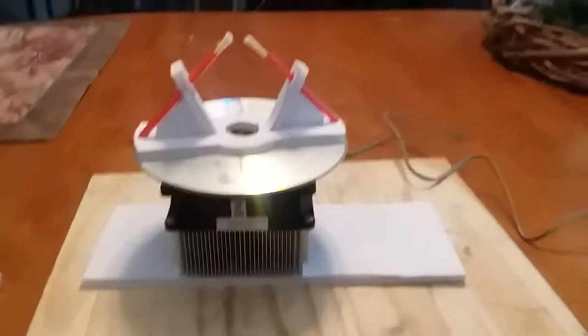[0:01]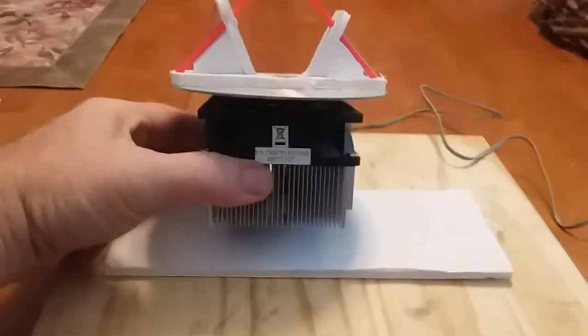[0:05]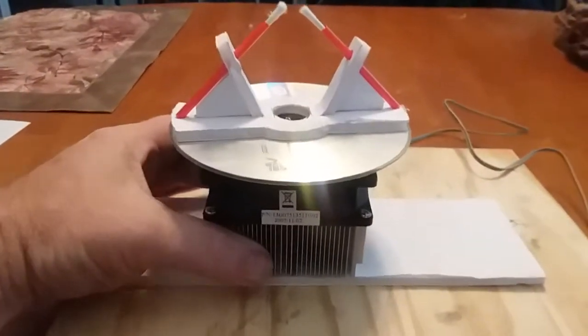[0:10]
Hi, this is Mitch, and I wanted to show you something that I made. I've been working on it the last couple of days, and it's what I call the $7 centrifuge.
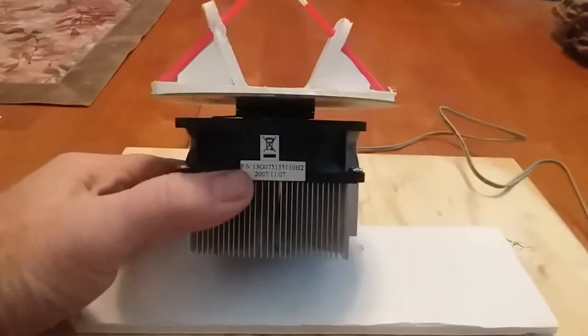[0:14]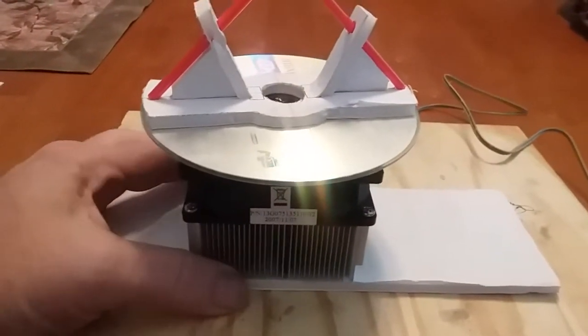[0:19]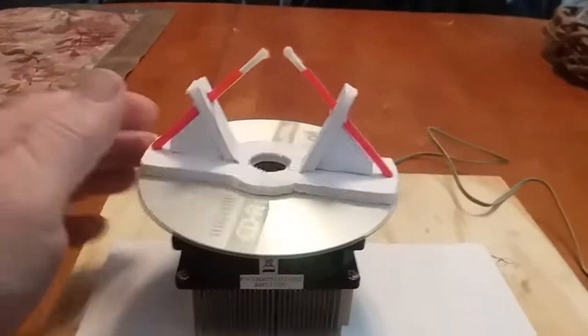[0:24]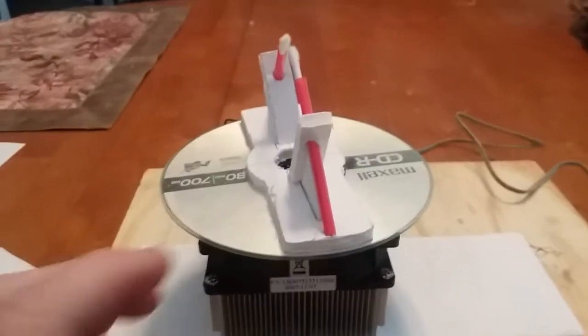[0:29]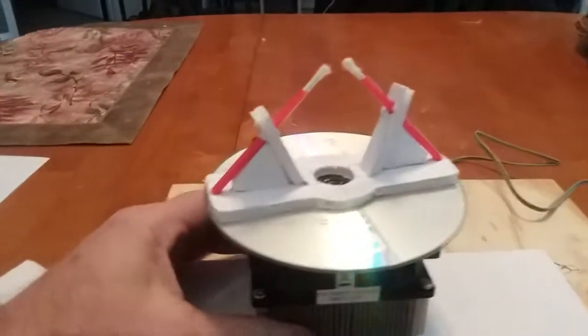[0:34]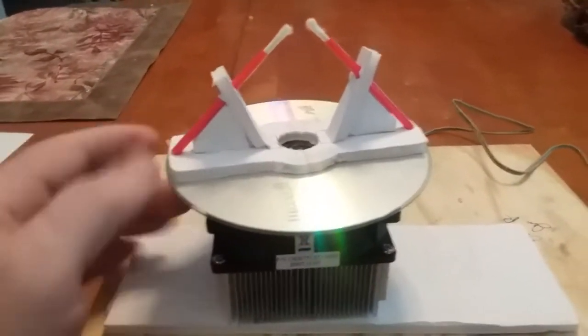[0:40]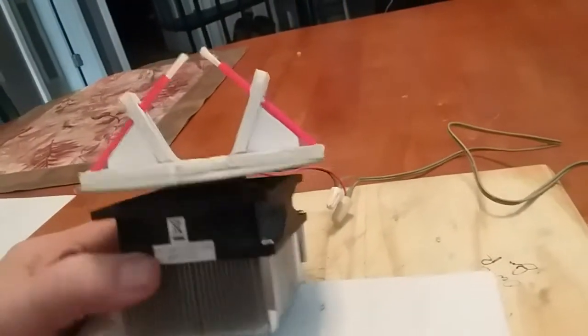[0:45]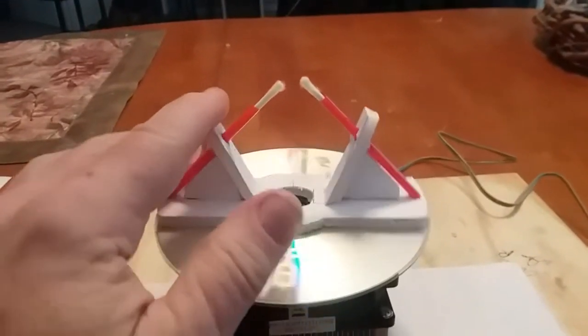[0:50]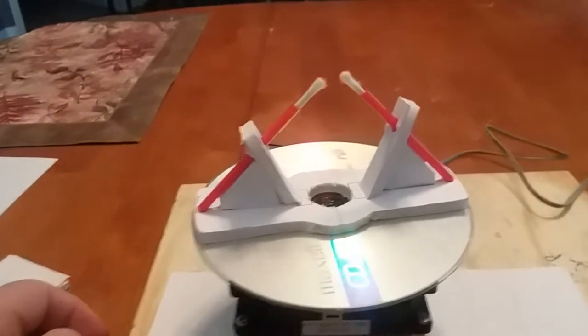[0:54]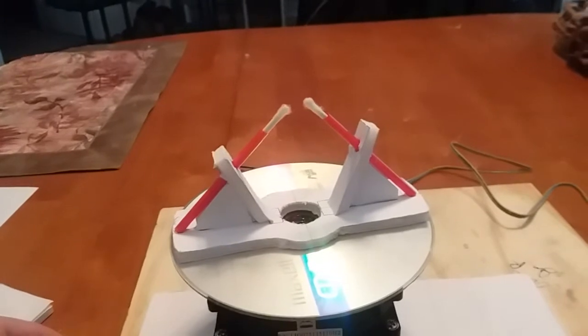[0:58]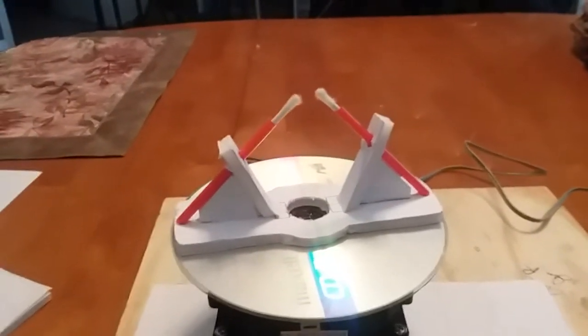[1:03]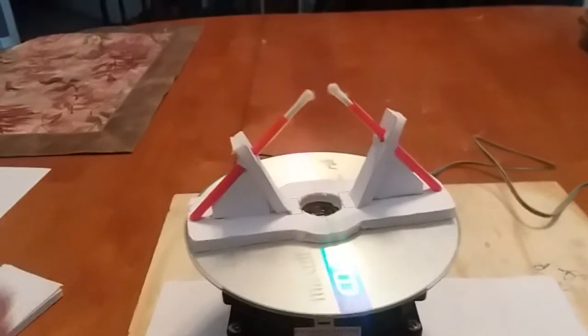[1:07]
And a microhematocrit tube is like a 1.5 millimeter diameter glass tube that you put blood into, and it uses capillary action. So after you prick your finger, you put this glass tube up to the blood droplet, and it just sucks it up into the tube.
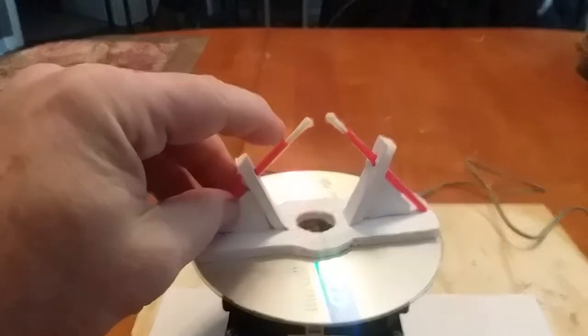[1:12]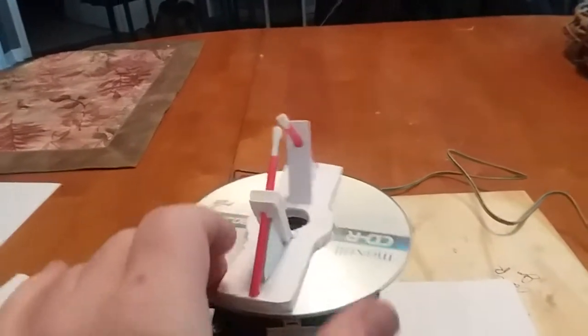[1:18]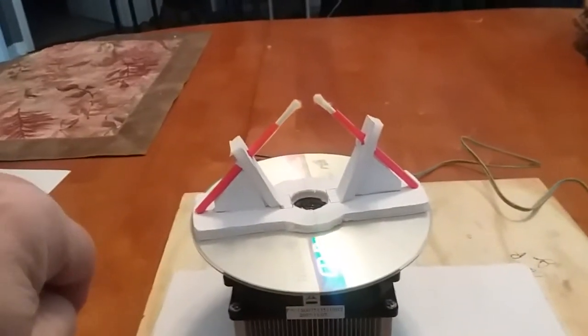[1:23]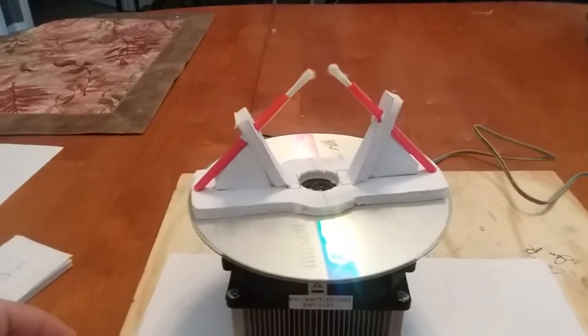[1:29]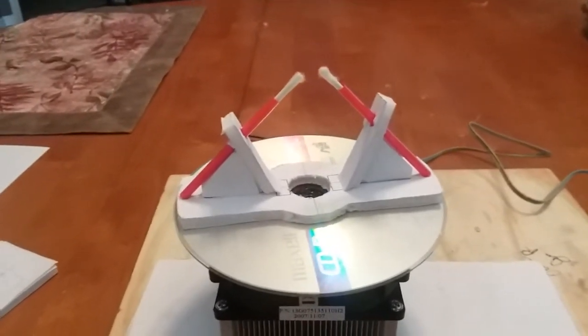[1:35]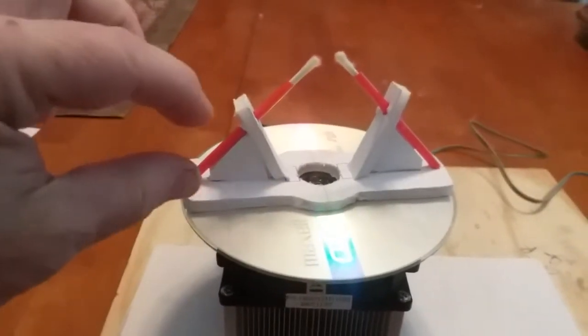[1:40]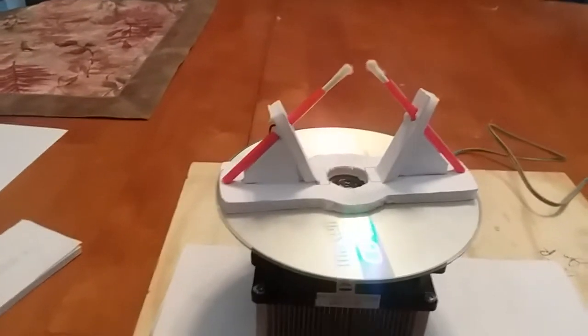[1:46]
And after you get the tube 75% full, you can put it in a centrifuge and you spin it, and then the centrifugal force will cause the red blood cells to move to the bottom of the tube, leaving the plasma portion at the top. And then after it's separated, you can measure the entire length of the fluid in the tube, and then divide that into the length of the column of red blood cells, and then you get your percentage of red blood cells, and that's your hematocrit number.
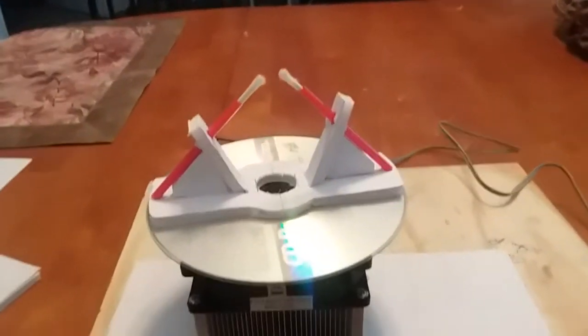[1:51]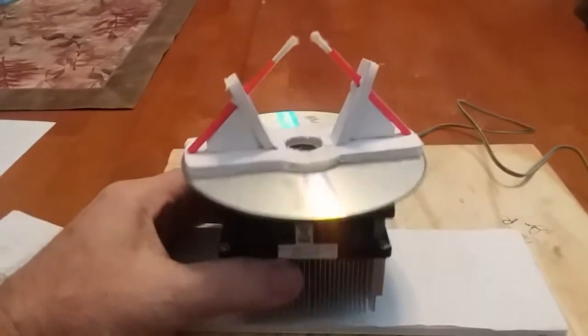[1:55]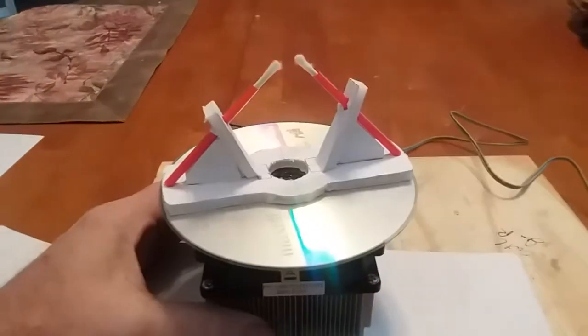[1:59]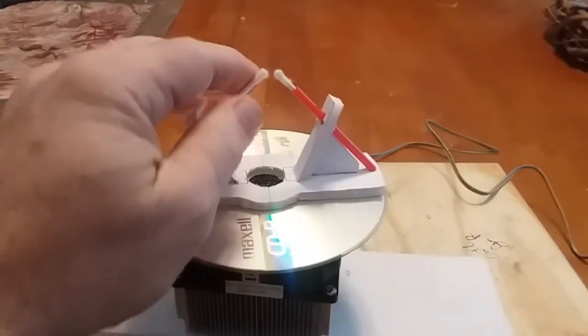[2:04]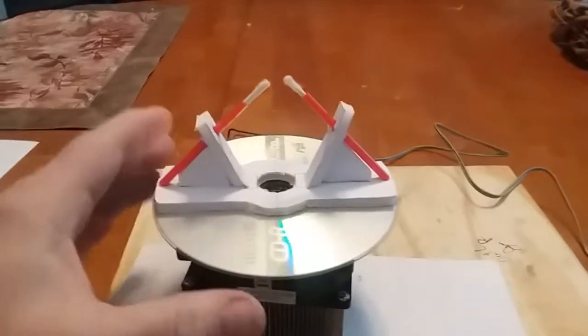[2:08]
So I think I can do this at home, and I wanted to try, so I made a $7 centrifuge. I don't have my hematocrit tubes in yet. They should be in any day. So I use Q-tips to kind of simulate having some kind of mass in there.
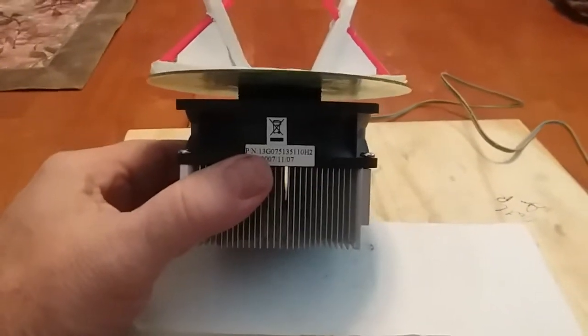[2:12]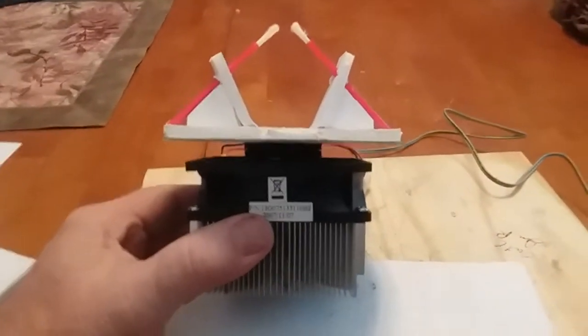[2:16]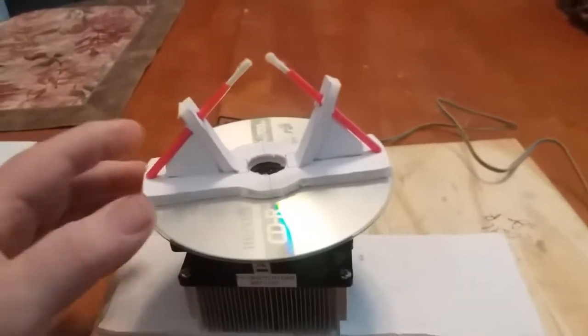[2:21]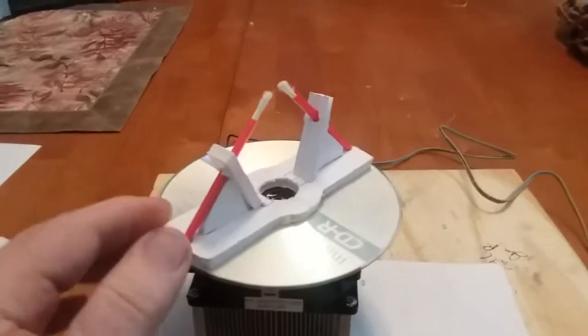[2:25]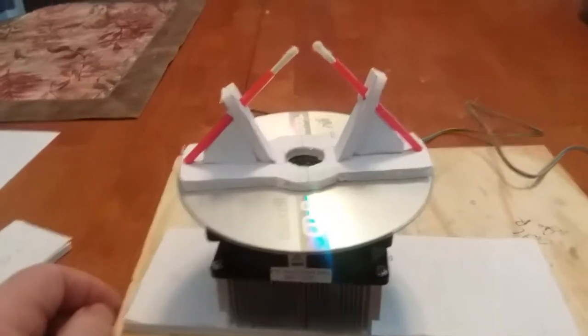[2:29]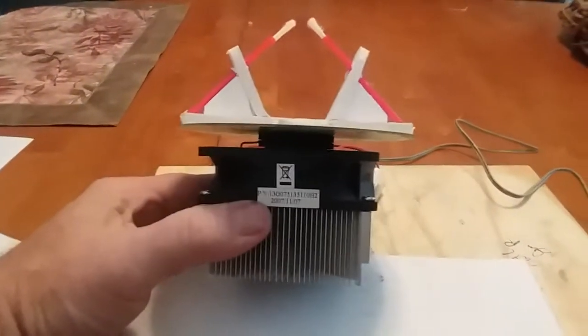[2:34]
And I wanted to tell you about how I came about making this. It was pretty easy. It didn't require a lot of great engineering skills. As you can see, it's really kind of crude and kind of ugly, but it's just a prototype to see if my design works. And so far, everything that I've done to test it is doing pretty good.
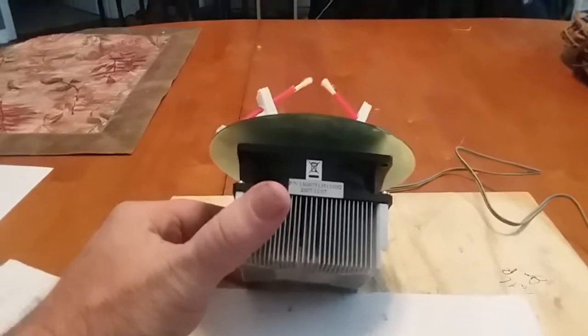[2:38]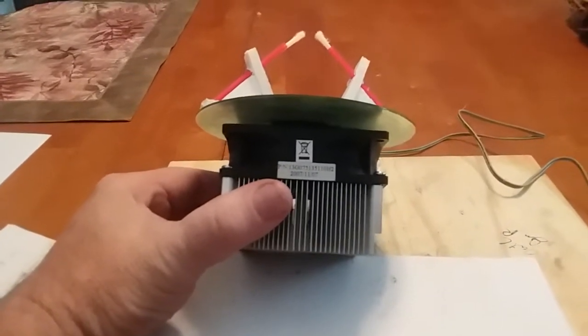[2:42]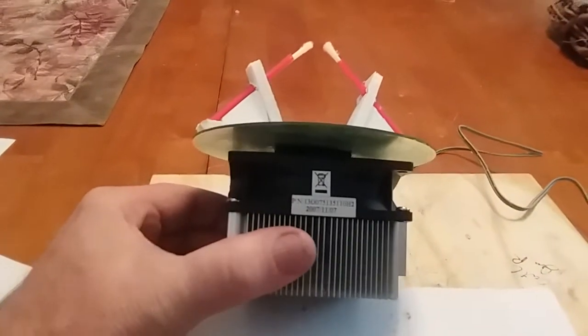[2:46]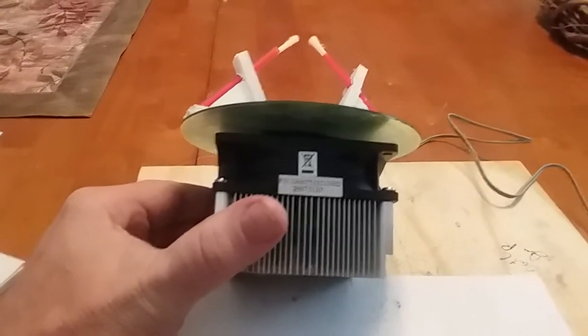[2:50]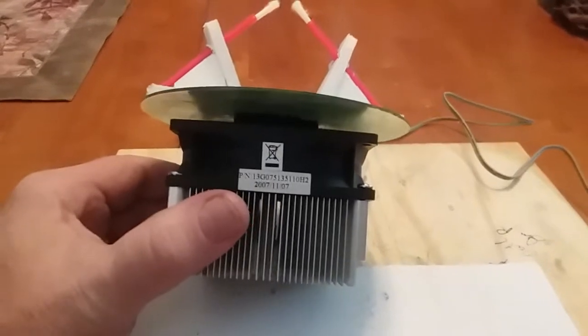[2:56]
So what I have, where my thumb is on here, is a heat sink out of a computer. Those are pretty easy to come by. I went to the computer recycling center, and I asked him for a computer fan, a cooling fan, which is the black part sitting on top of it, and he gave me this.
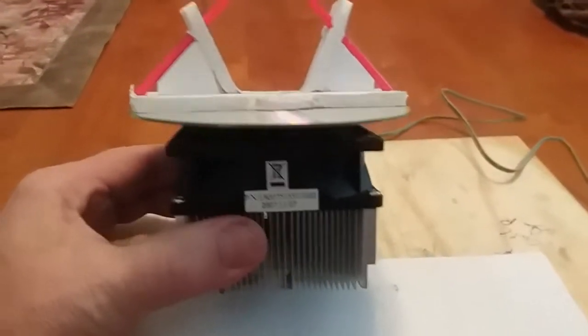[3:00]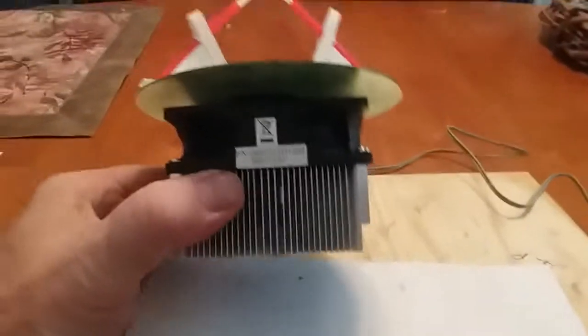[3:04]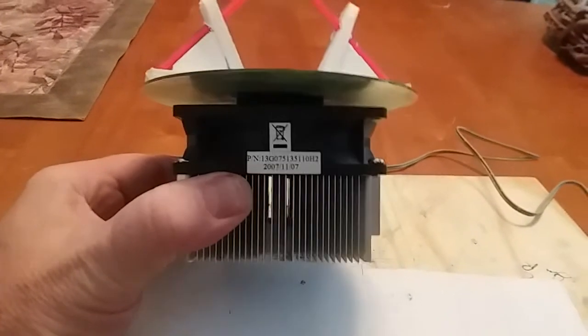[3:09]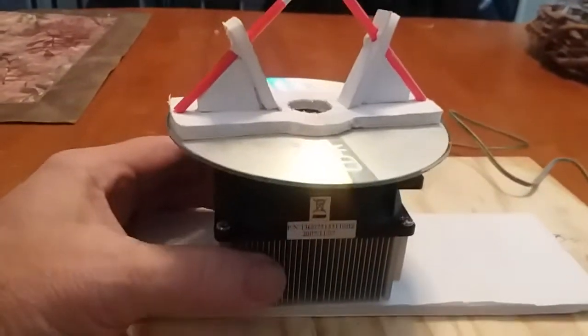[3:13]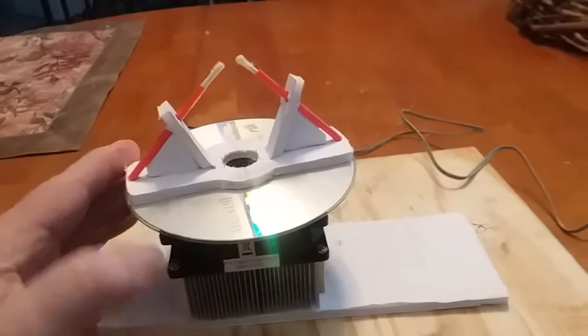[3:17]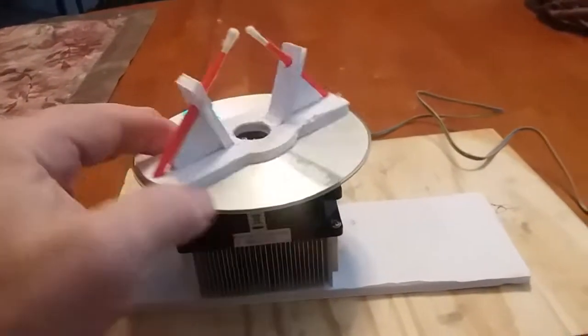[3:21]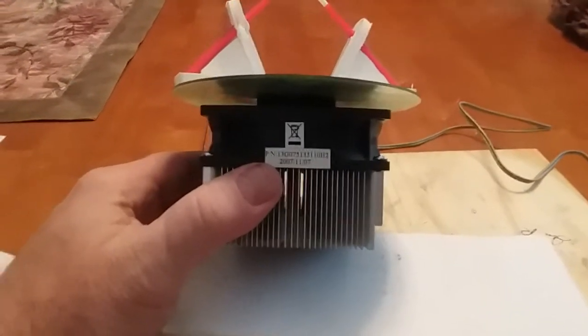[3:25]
I decided to keep the heat sink because everything else is really light, and the heat sink adds some mass to it. So this thing weighs about 0.25 kilogram, so it gives it some weight, and that'll keep any vibration from causing it to walk across the table as it spins. So I left it on there. You wouldn't have to use that. I kind of like having the extra mass there.
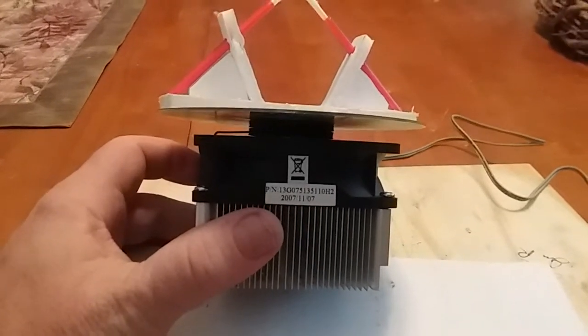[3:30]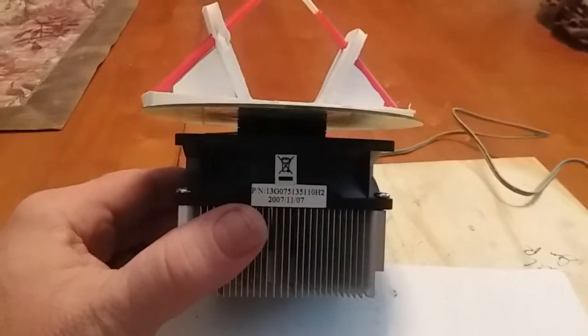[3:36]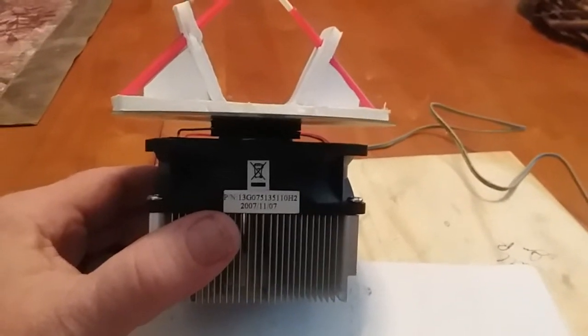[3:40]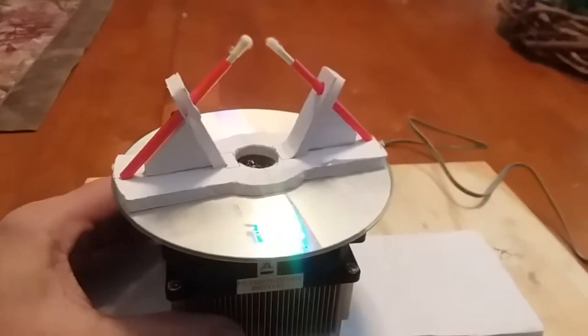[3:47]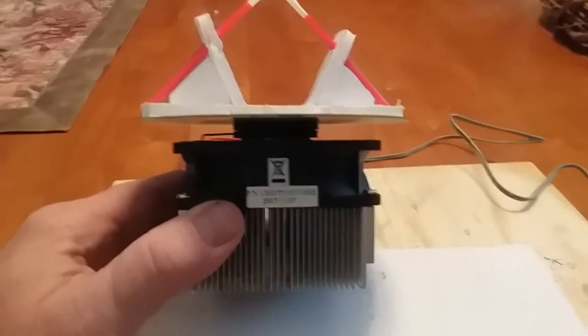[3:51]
And then there's a 12-volt cooling fan. It's an Asus. And you might get a 12-volt one. It's a little bit easier to find transformers or converters to change your home AC electric down to 12 volts DC. They're pretty popular, pretty cheap. You may even have one laying around your house. I did.
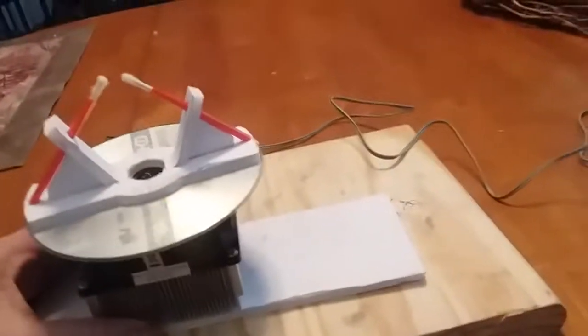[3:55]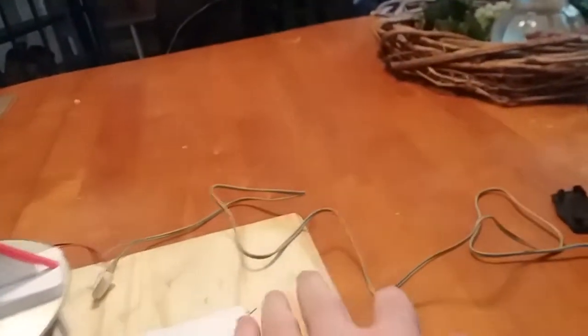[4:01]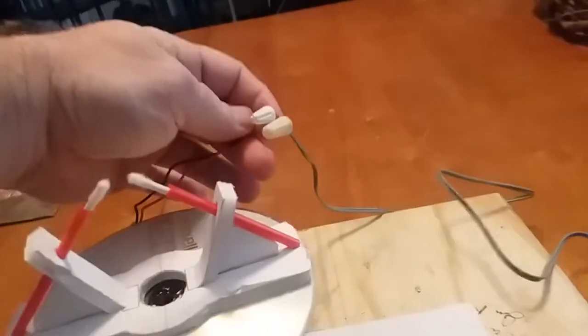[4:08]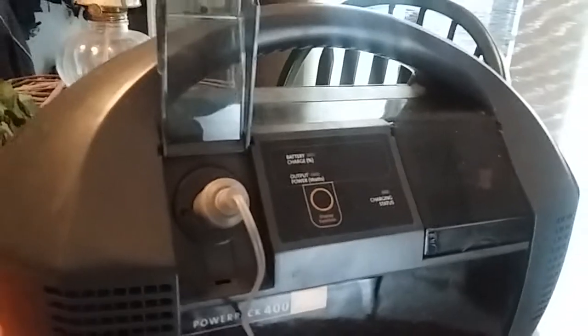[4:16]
Well, I couldn't find one, actually. I couldn't find a 12-volt. So I took this accessory plug for an auto accessory, and I cut it off, and then I just spliced in the wires to the leads, and then I just plugged it into a 12-volt power supply that I happen to have at home. So that's what I'm using right now.
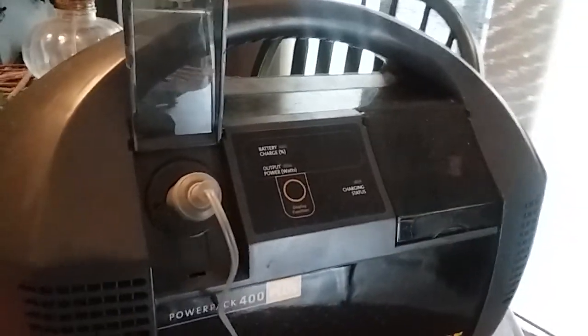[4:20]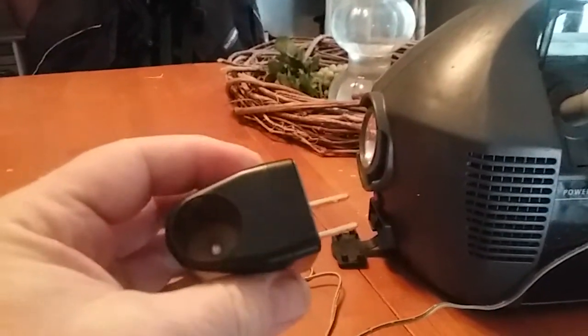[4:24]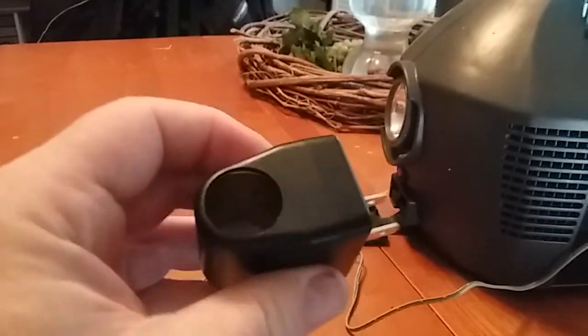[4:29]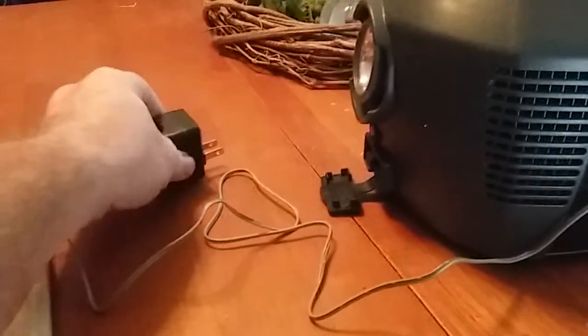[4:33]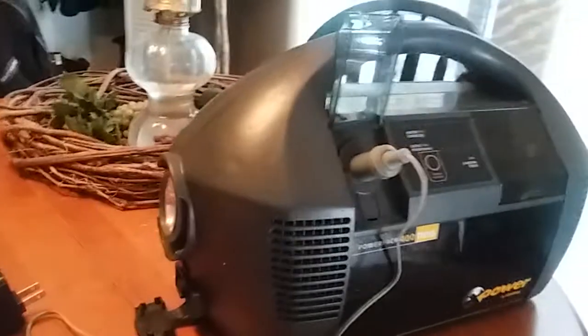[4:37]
But I also have one of these transformers that will take the 120 volt from my home electrical down to 12 volt DC, so that'll allow me to plug it into the wall if I ever need to. The cord isn't very long, so I'm using this, and I think it'll do just fine for now.
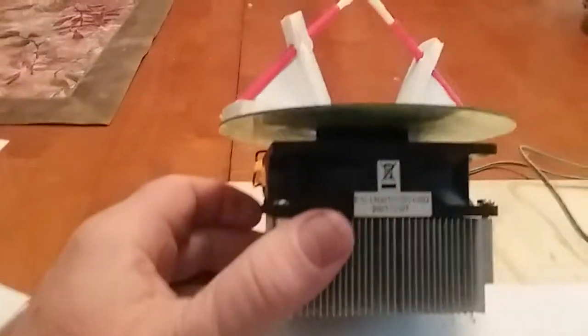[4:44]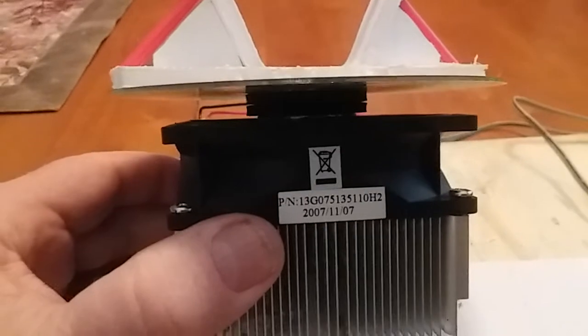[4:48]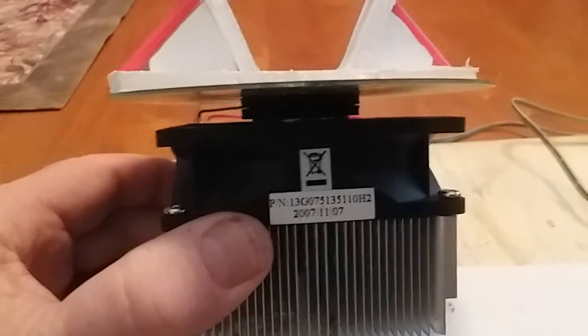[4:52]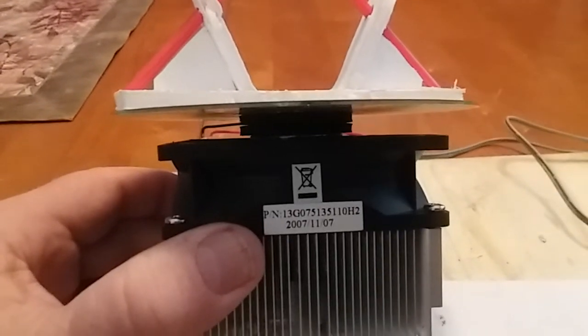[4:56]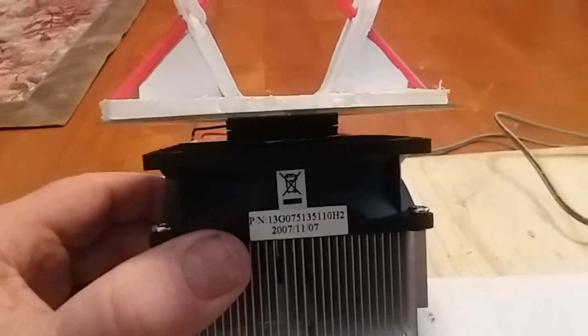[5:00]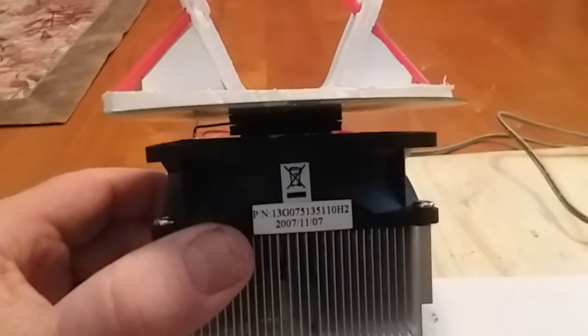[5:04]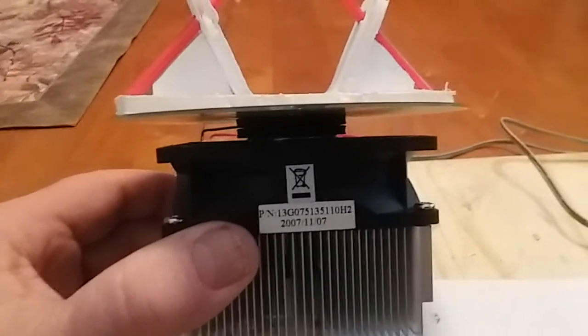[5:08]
So what else do we have on top of the fan blade hub in there? You see something kind of shiny. That is a fender washer, and it is glued to the hub of the fan blade, and it's a circle, about 35 millimeters in diameter. So I got a washer to closely approximate that diameter, and I glued it right to the hub
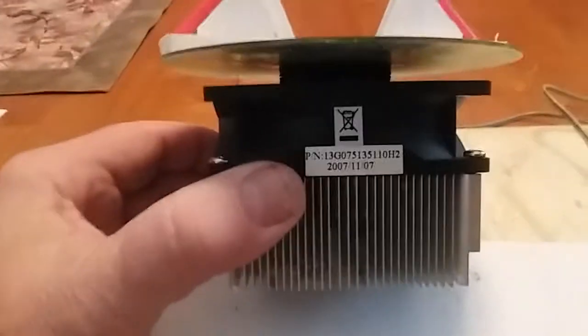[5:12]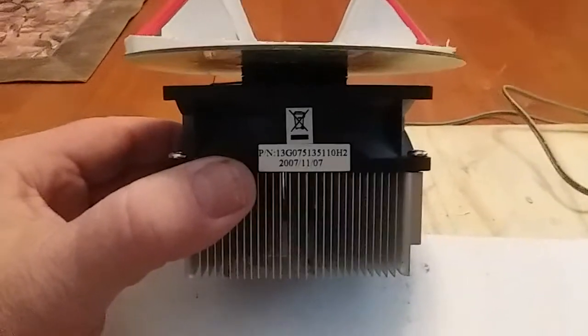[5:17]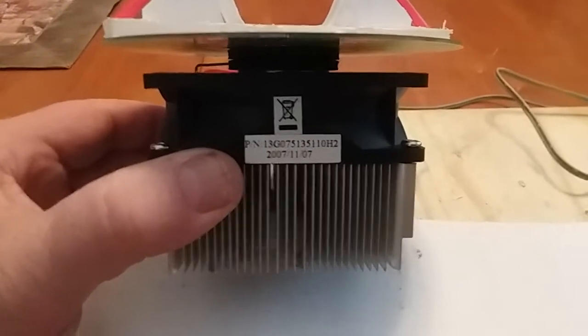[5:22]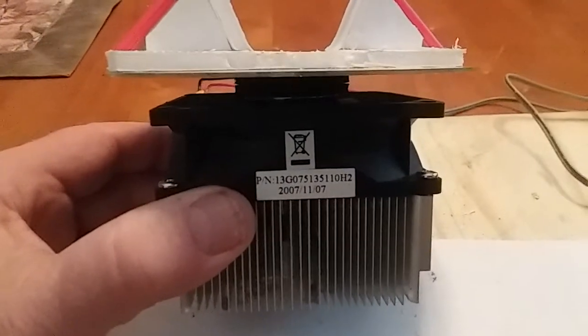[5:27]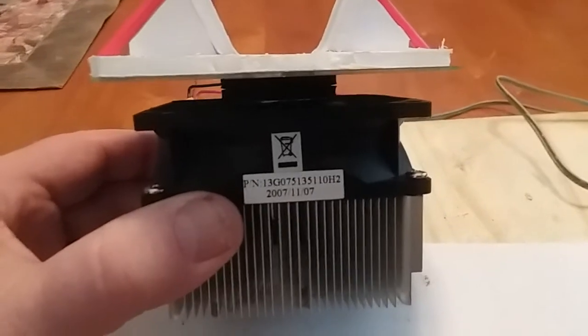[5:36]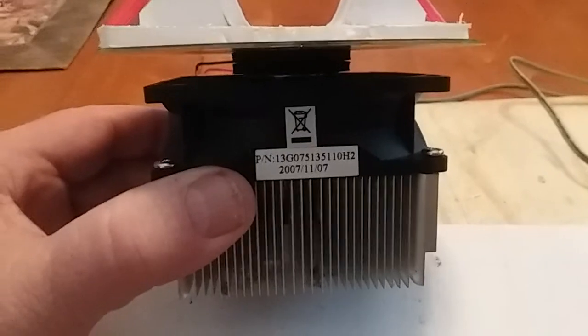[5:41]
using Gorilla Glue. And Gorilla Glue is nice in two ways for this application. One is it glues just about anything to anything else. And two, it doesn't set up real quickly. So it gives you about 10 or 15 minutes to center that on the hub so that it doesn't vibrate when it spins. It's kind of hard to get something centered without an instrument to do that. So I used a straw. I'll show you how I did that a little bit later. You might find it helpful.
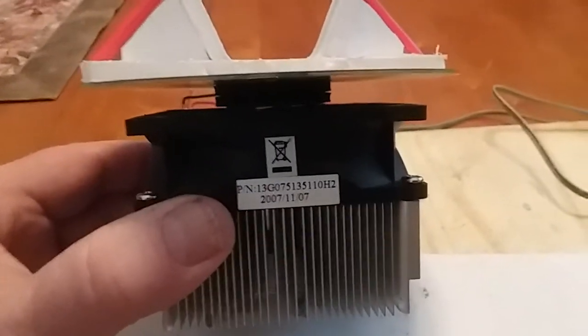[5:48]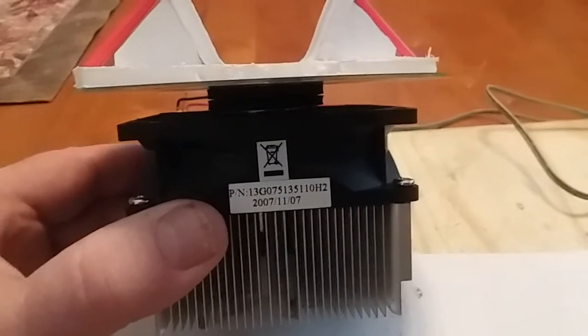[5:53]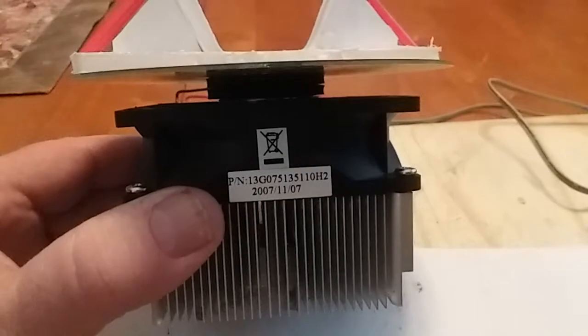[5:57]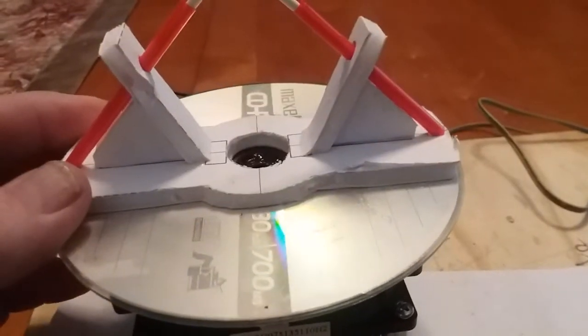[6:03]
And on top of the steel washer there are two rubber washers. They're a little bit bigger, as you can see, than the steel. And that gave me something to glue the disc to. This is just a CD, of course. And everybody's got those laying around.
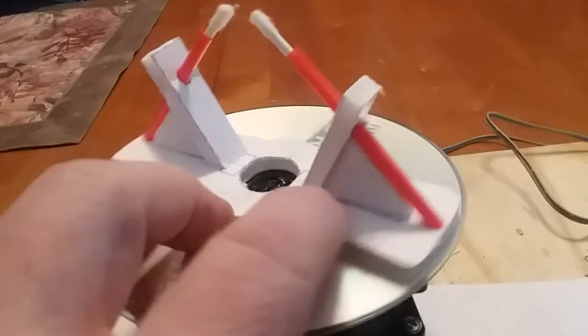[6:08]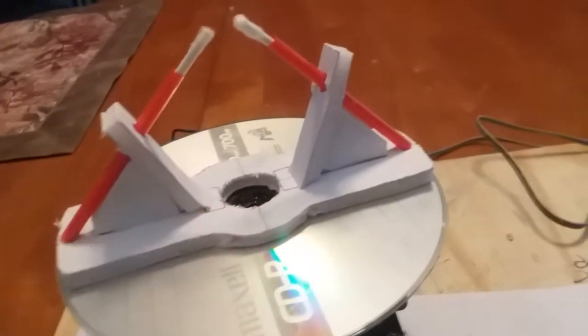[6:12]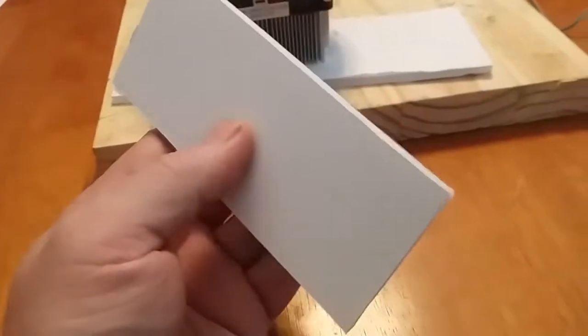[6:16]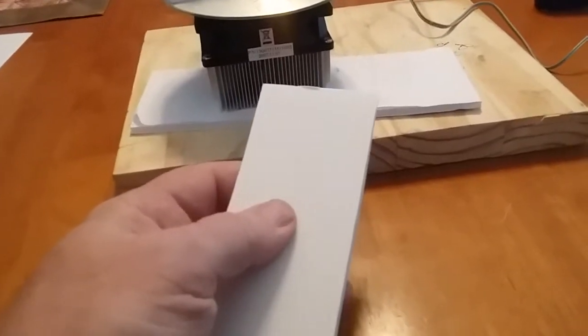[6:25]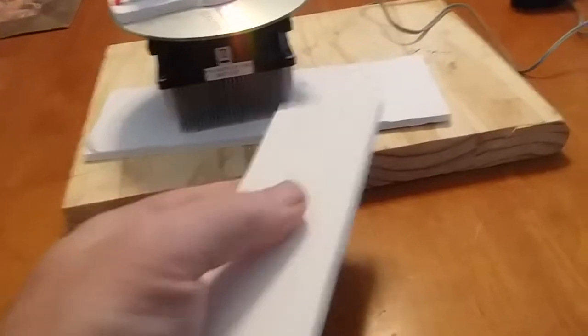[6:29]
And the parts are made out of what's called foam core. It's this white board. And foam core is really cheap. You can buy it at Walmart. You can buy it at Hobby Lobby. You can buy it in any place that sells craft supplies. And it's really pretty rigid and solid structurally, but it's also very light.
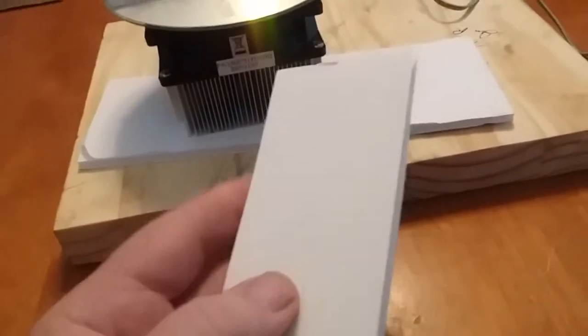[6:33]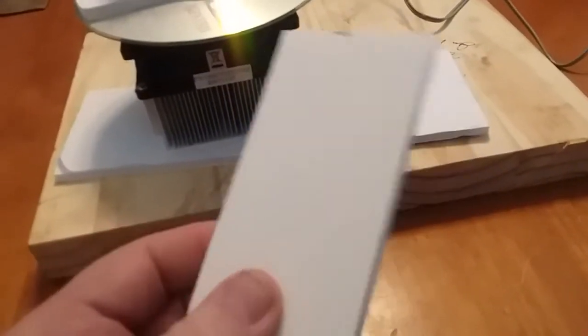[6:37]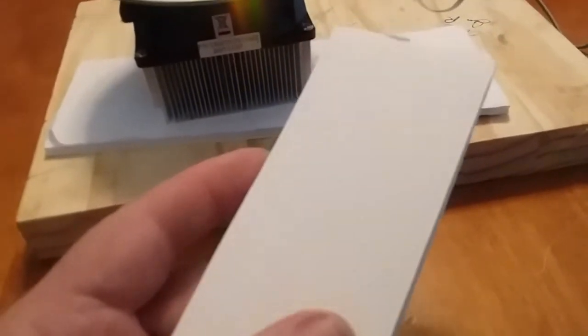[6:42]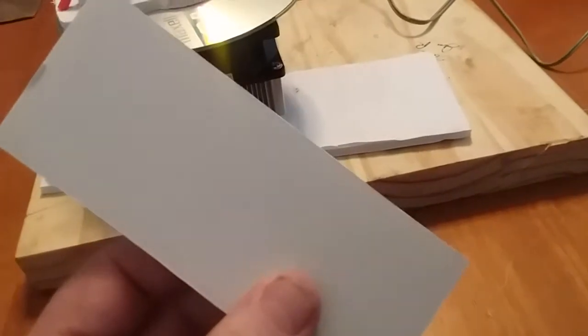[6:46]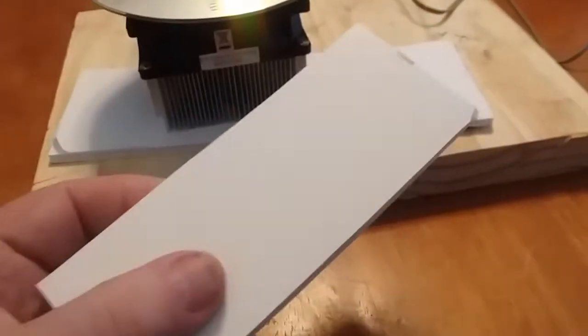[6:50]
So it makes it pretty good material to work with for something like this, because it's pretty easily shaped. And like I said earlier, it's kind of ugly when you cut it out. It's not real pretty and neat, but it works. And my purpose here was just to see if my design worked.
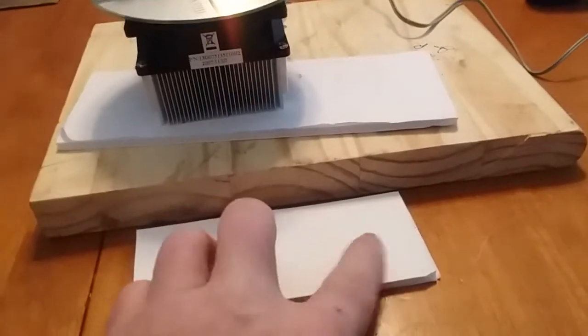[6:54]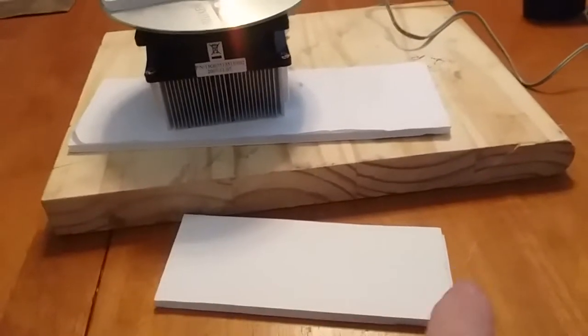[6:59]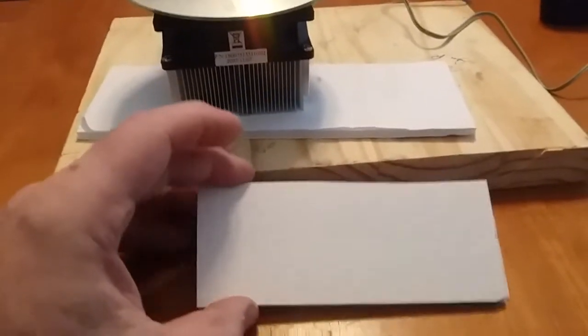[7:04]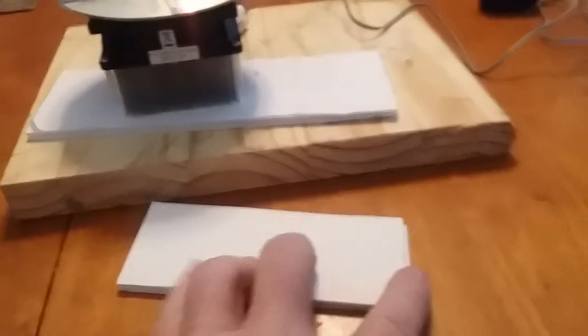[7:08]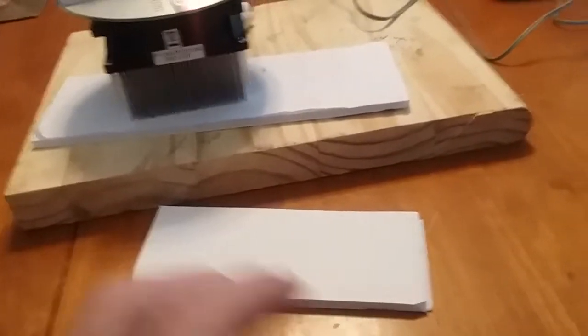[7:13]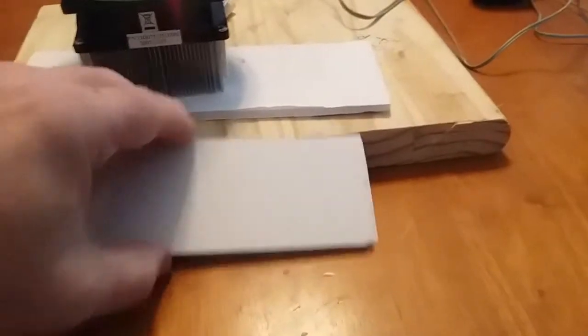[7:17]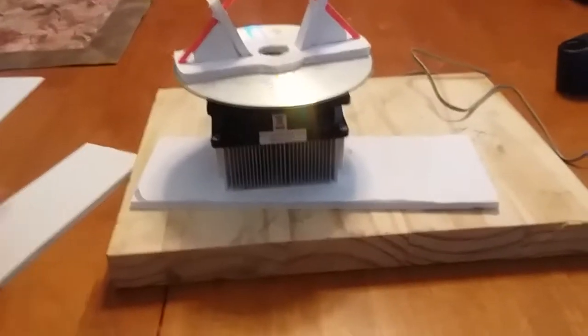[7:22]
So I would get this board, and I would spray some spray glue. I didn't have spray glue, but I had some Flex Seal stuff, like you see on TV. It's kind of like a spray paint, but it's just clear. And that did just fine. So if you have some clear coat spray paint or something that's clear, or maybe even white spray paint, it would probably work too. But it glues paper down to the foam core pretty well.
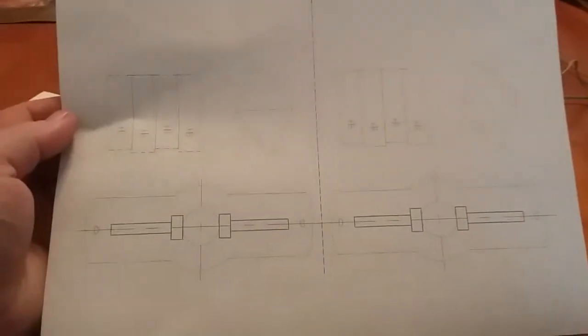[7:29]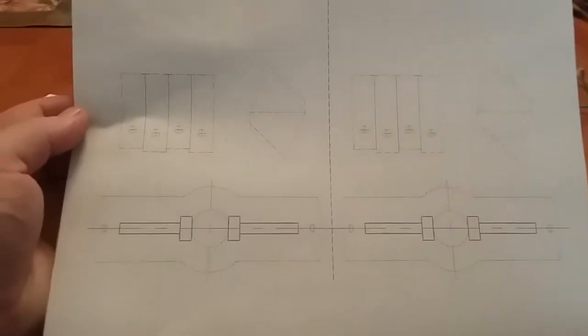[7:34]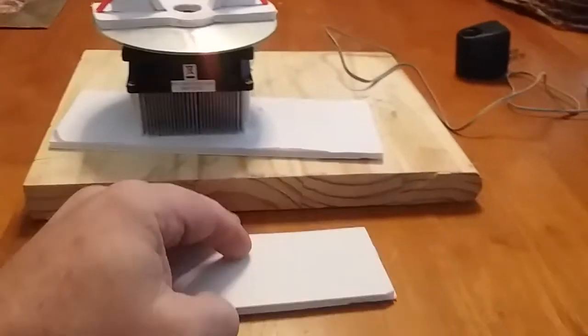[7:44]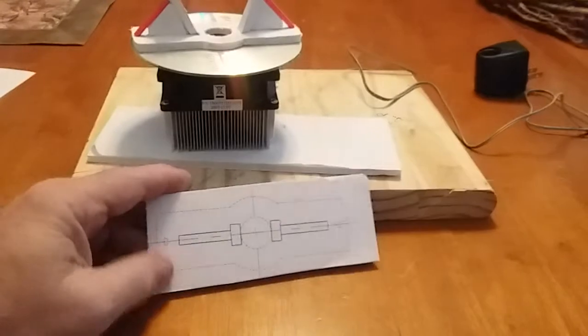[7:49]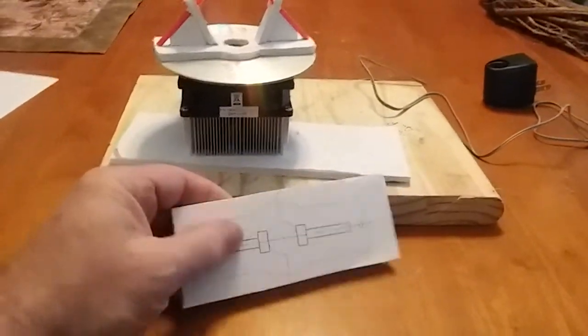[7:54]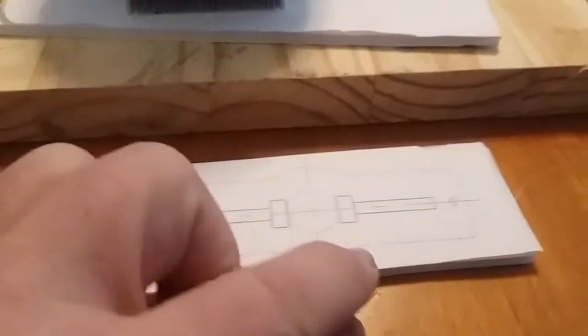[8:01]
And then I went on to CAD, and I made a design that I thought would work. So here are two full part sets from the template that I have. So I printed out this piece of paper, and then I sprayed the foam core with the spray glue, and then I put the template down on it and pasted it to it. So it's on there pretty good, and it's not going to go anywhere. And then you take an X-Acto knife, and you cut the dotted lines.
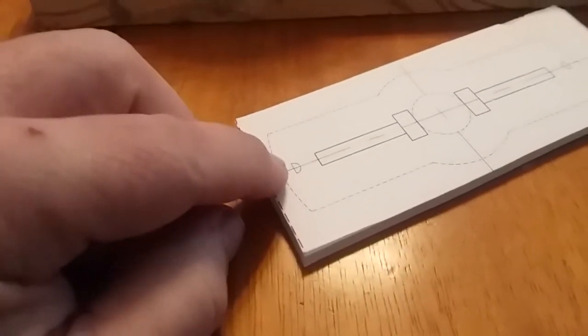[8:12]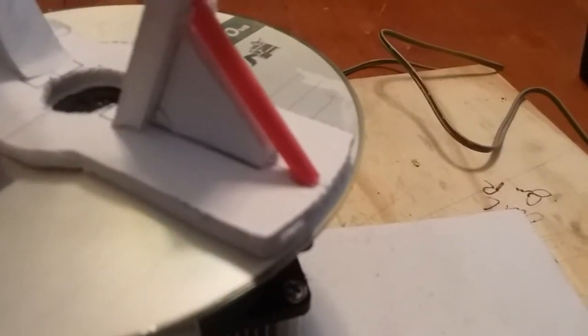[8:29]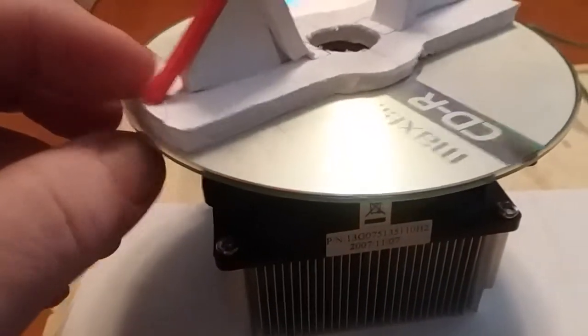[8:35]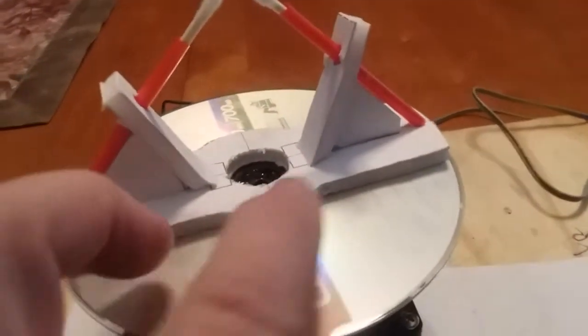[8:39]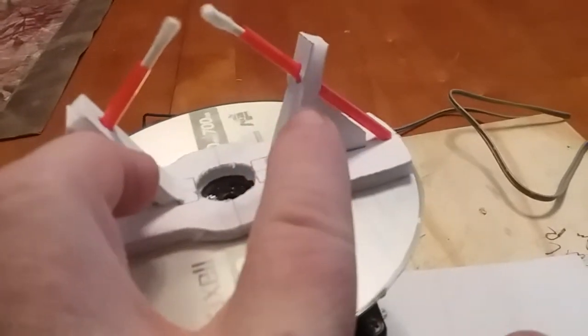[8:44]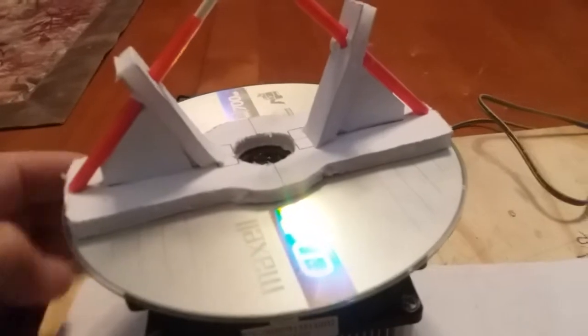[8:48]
You cut out the center, and you cut out these two little, whoops, there goes my focus. Autofocus isn't working, sorry folks. But if you cut out these little notches here, they hold the microfilament tube holder in place. And all that is a straw. It's just a coffee straw, and it fits down in that divot, as you can see. And it keeps it from sliding out the bottom. And I wasn't sure if it would hold it in place, but everything I've done so far, it's working just fine. And then these are the other four parts, two gussets and two straw holders. And then that's really all it is.
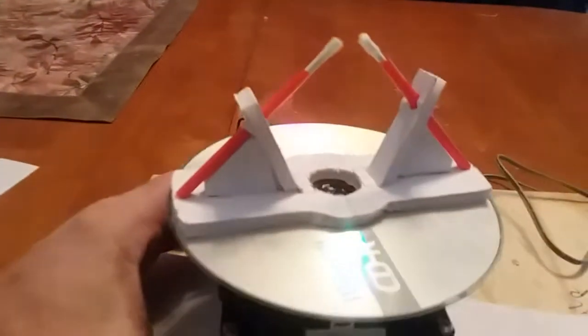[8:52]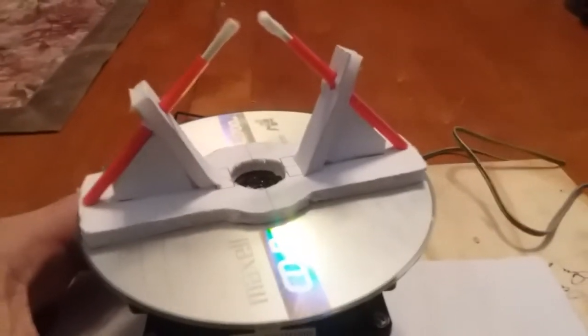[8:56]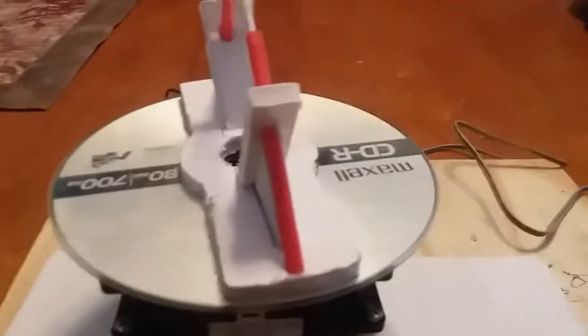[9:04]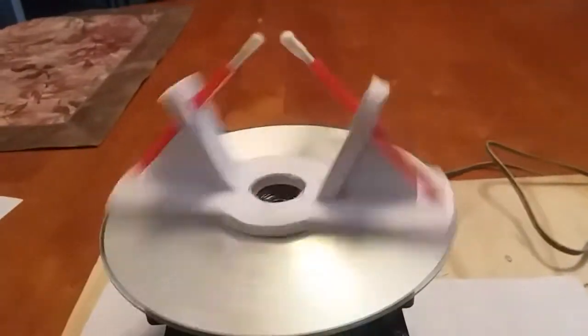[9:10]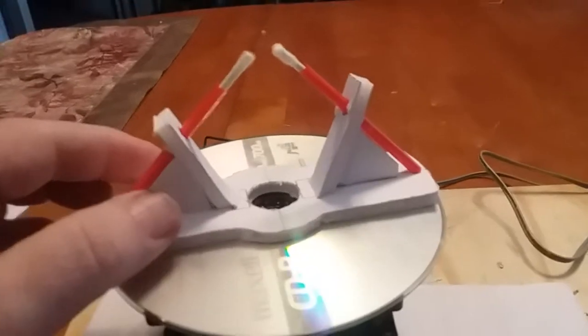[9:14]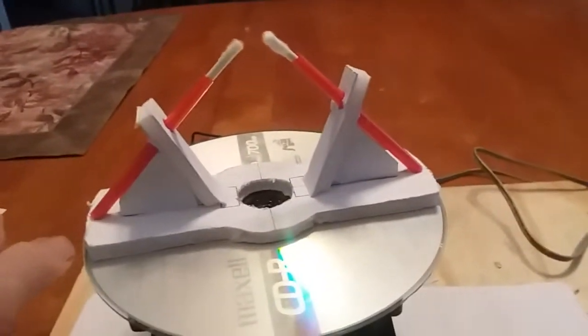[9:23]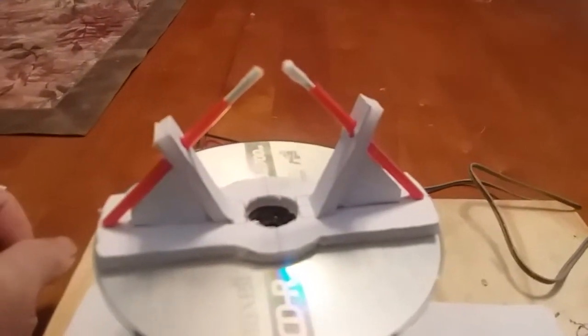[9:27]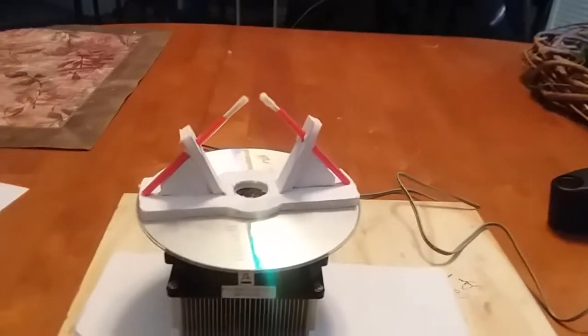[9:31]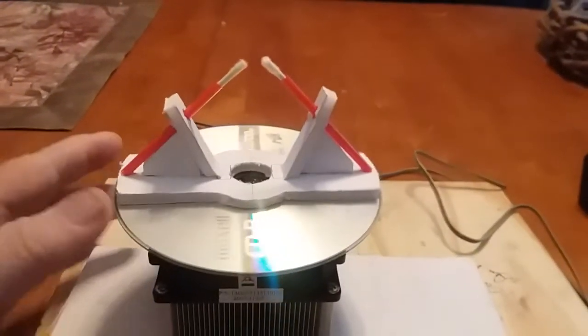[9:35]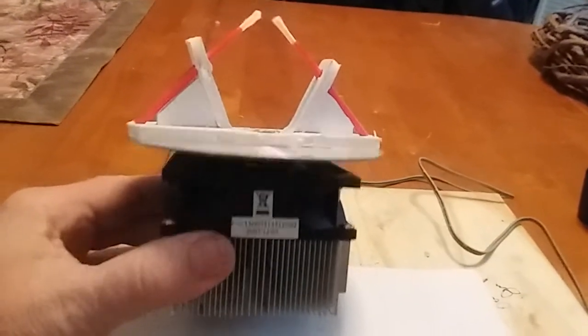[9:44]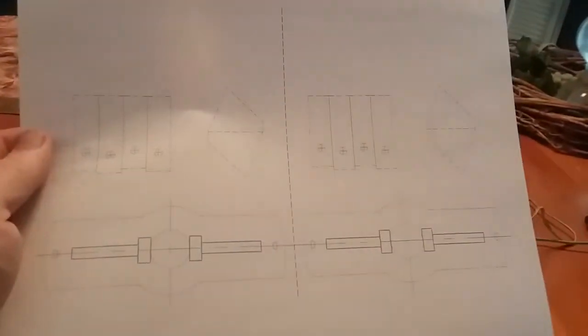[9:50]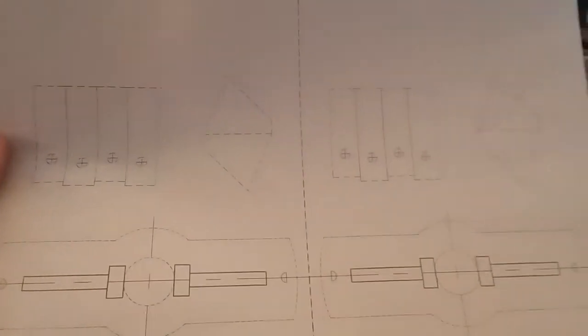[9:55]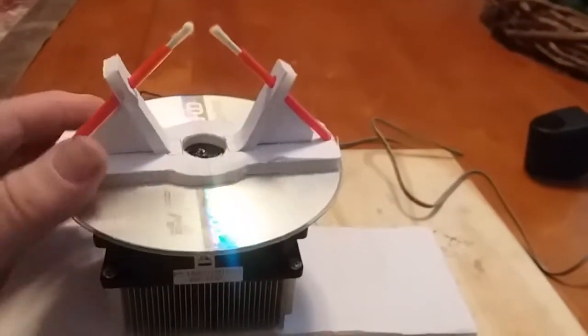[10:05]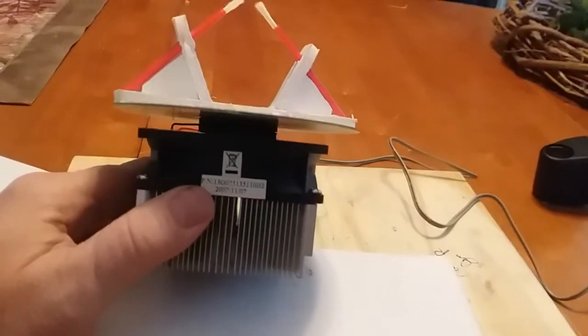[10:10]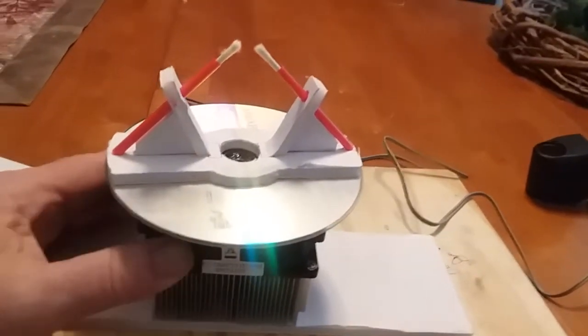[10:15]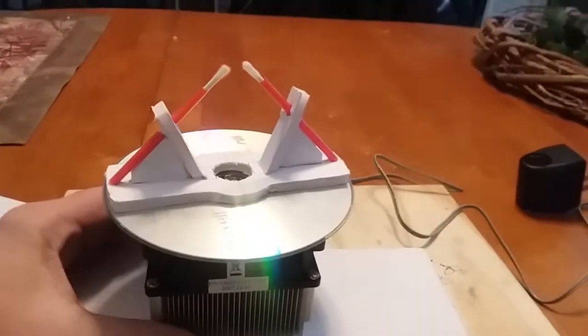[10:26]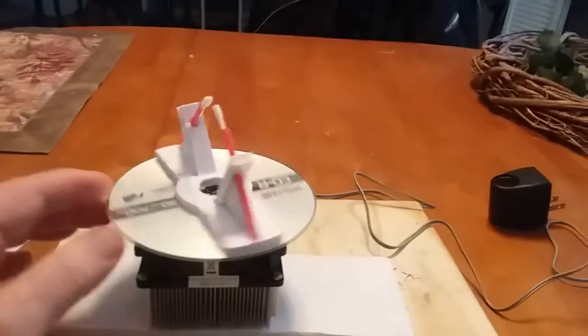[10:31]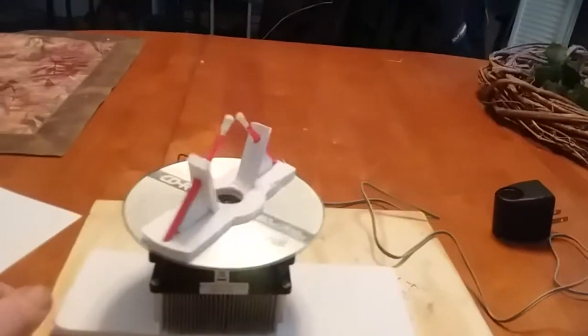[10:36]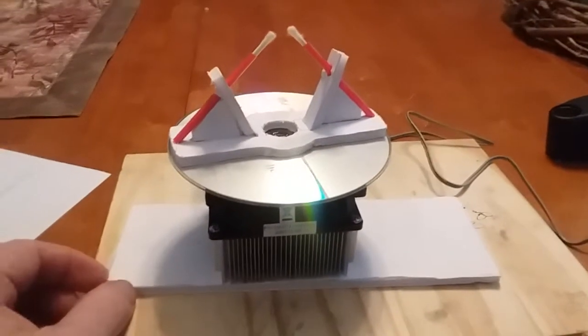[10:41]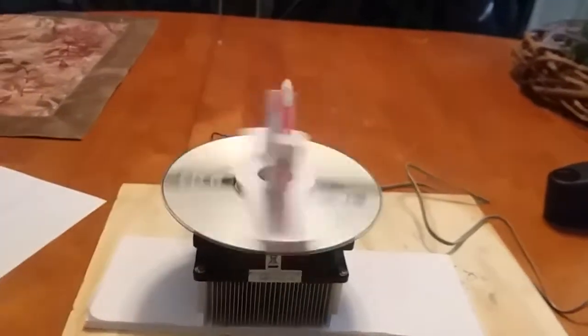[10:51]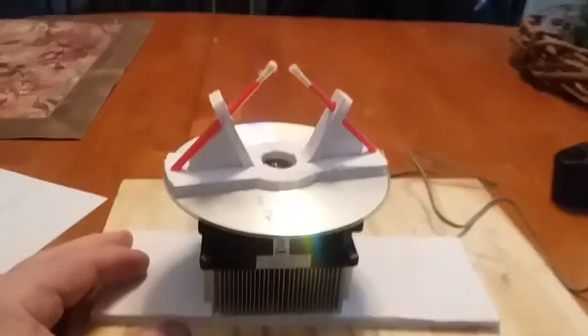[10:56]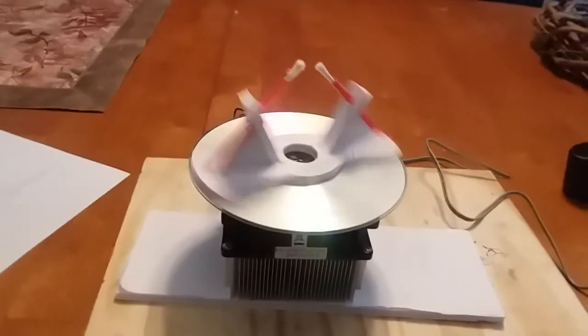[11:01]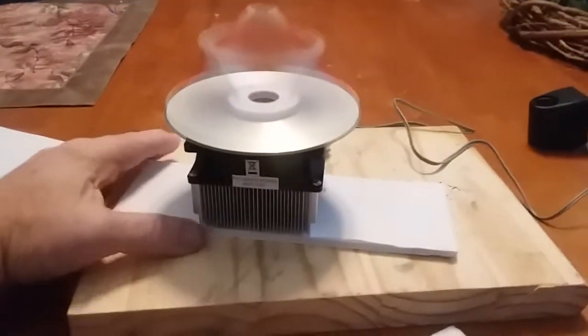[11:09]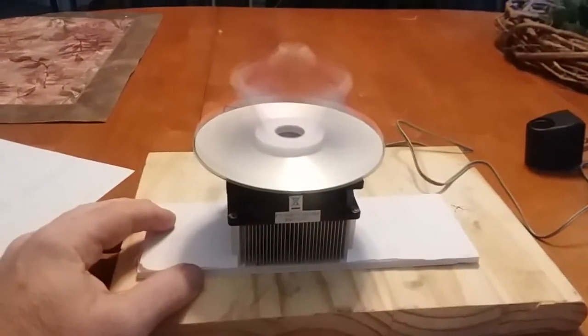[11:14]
So there is a $7 Microfuge. Oh, here, let me go ahead and spin it up for you and let you watch it work. Let's see, you can see it spins pretty fast. You can also hear it vibrating just a little bit.
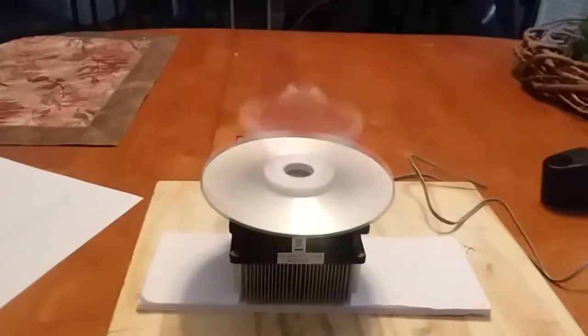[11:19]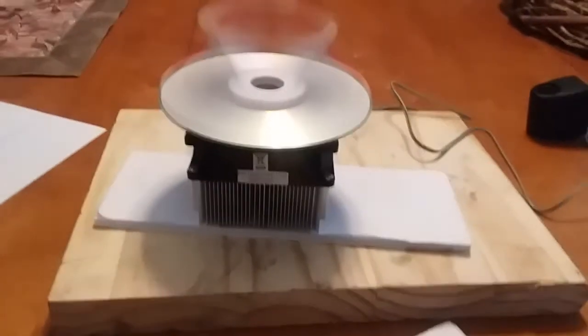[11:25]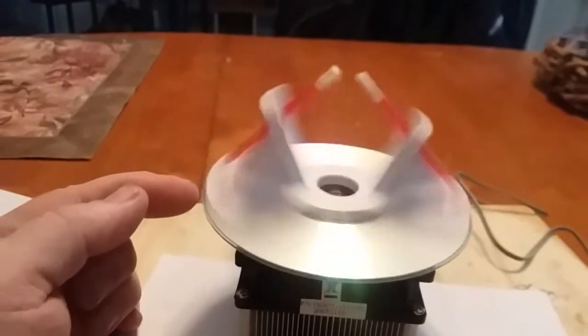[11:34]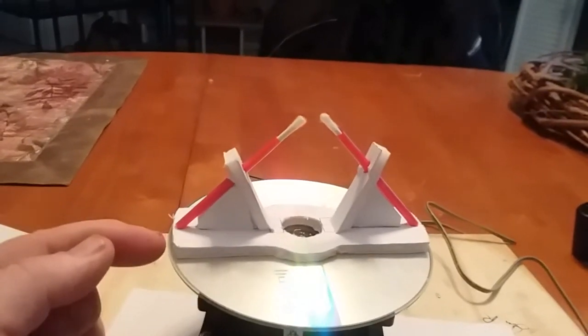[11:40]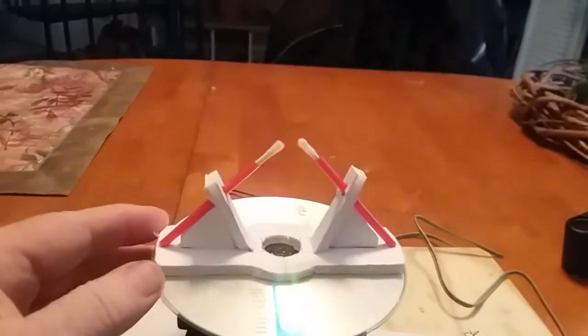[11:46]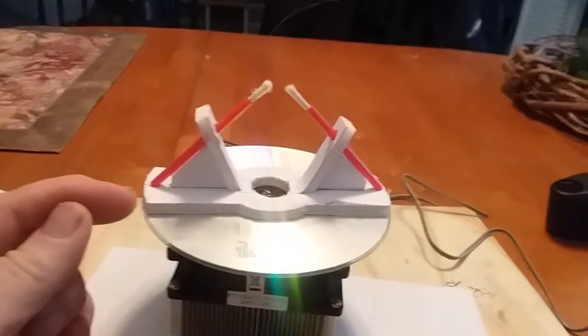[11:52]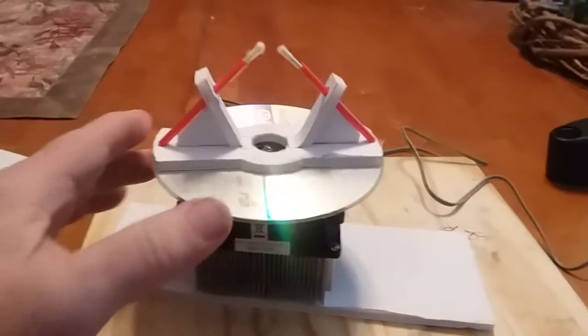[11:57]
So I didn't really have a scientific way of centering these. So I could only just get as close as I knew how I could get and hope for the best. And I used a piece of a straw to center the washers and the CD. And I'd stick the straw up next to it like this and then watch the gap. See the gap in the white space there? You watch that grow and shrink, grow and shrink. So when it shrinks, that means that it's got to go this way. And you just keep doing that until you get it as close to perfect as you can tell just by holding something up against it. That's how I centered the washers, the three washers on there, and of course the CD.
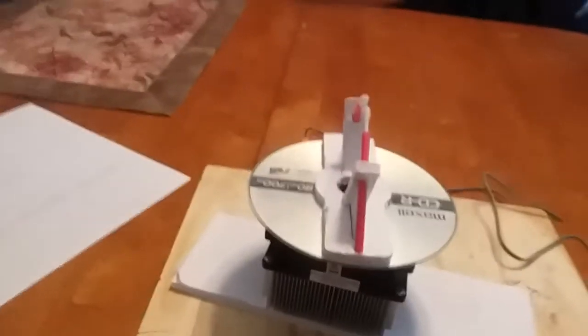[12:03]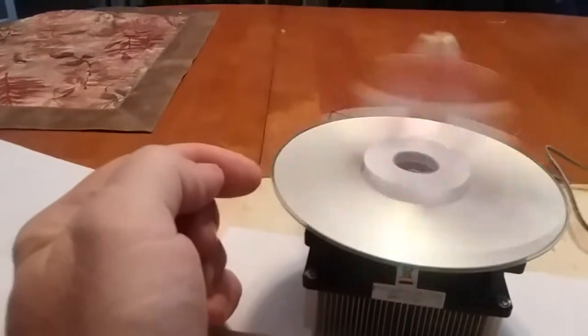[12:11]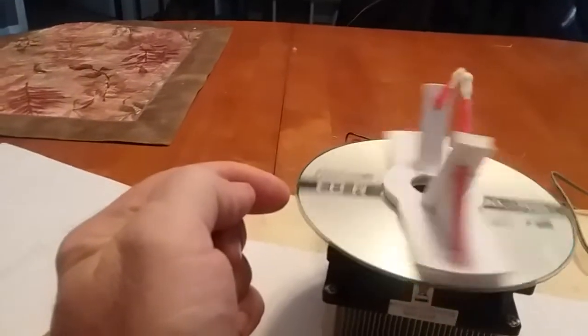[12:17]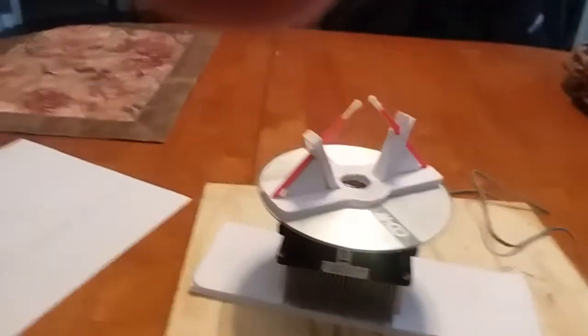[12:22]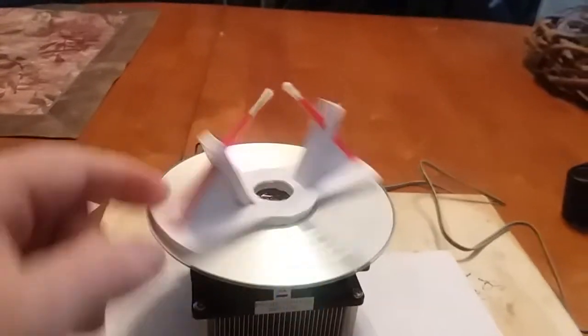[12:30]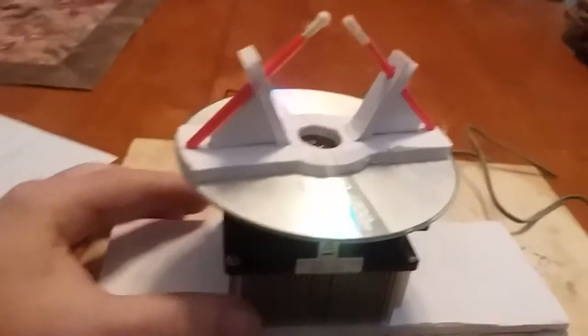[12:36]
And as you can see, it's pretty, let's spin it up again, it's pretty close to being centered. You see the gap doesn't really grow or shrink, it stays pretty constant. So that's one way to balance it, or at least center it anyway. And if everything is put in the right place, it should be balanced. So it shouldn't be off balance too bad. So if you can center it spatially, then it should be pretty balanced as far as the mass goes.